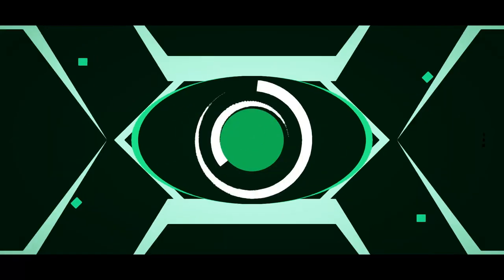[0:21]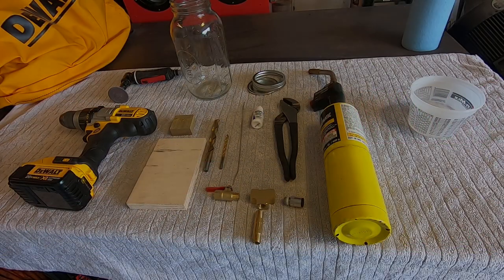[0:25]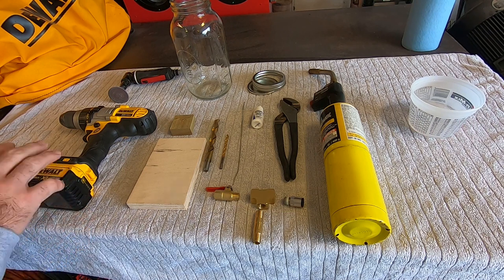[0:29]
Today I'm going to show you how to make your very own vacuum chamber using a half gallon mason jar. You can find them readily available at most supermarket stores. Very fun and easy way to get into wood stabilization or science projects, anything of that nature. Let's head out to the shop and get started. These are the materials you're going to need to make this vacuum chamber: a drill,
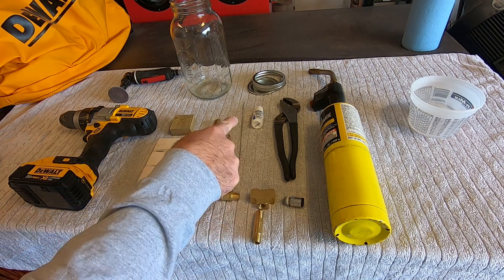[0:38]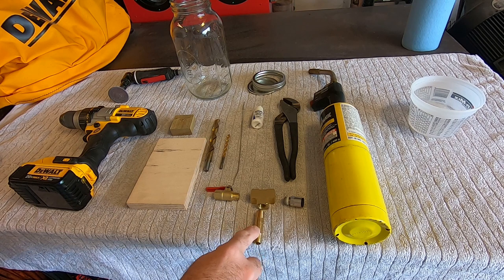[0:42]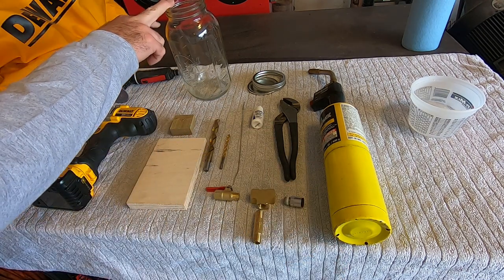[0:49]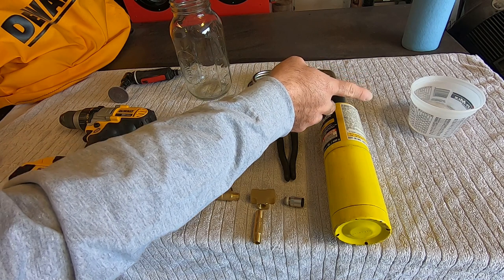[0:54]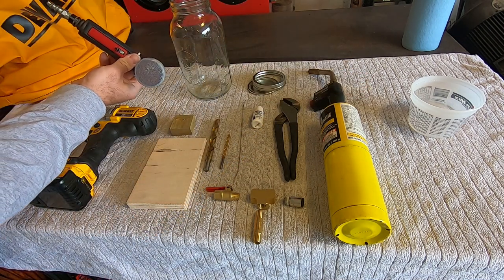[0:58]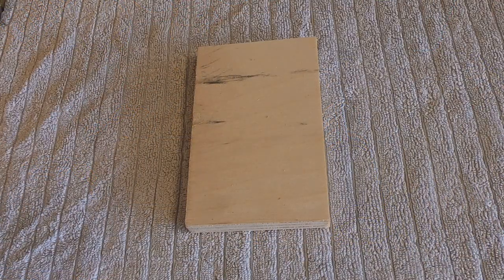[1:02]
a couple of pieces of wood for drilling the lid, a 31/64 drill, a smaller drill for a pilot hole, solder, flux, a quarter inch NPT valve, a cross, an inch and a half nipple, a quick disconnect for PEX, pliers, a torch, your half gallon mason jar, some water to cool off your part after you've soldered it, and I'm using a 90 degree air grinder to clean the galvanizing off the lid.
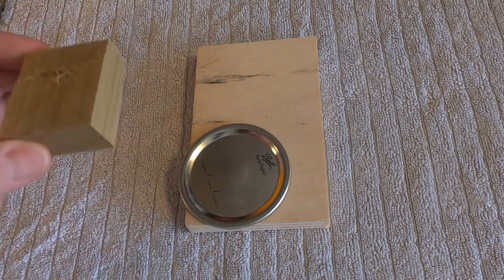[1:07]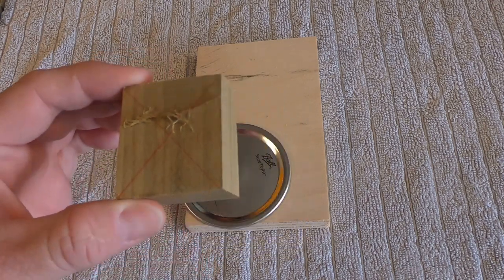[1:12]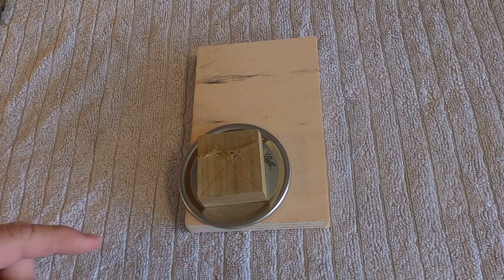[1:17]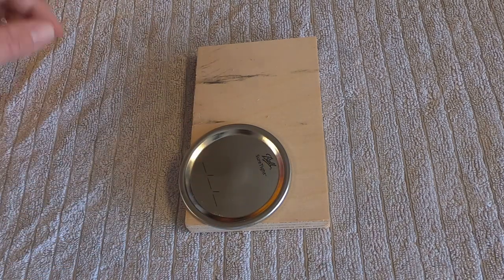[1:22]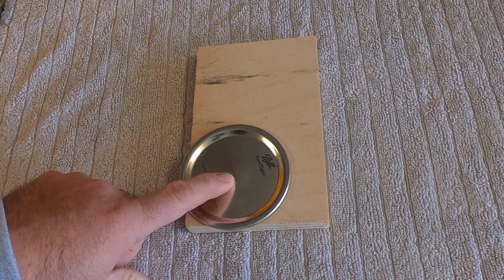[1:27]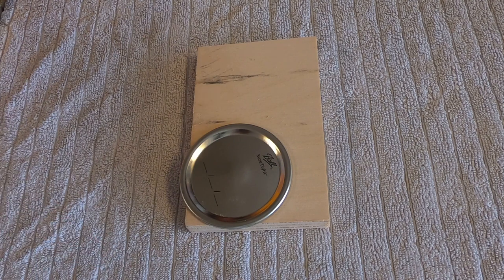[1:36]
What we're going to do is drill a hole in the lid. I've cut a piece of wood in a square and put an X on it so that I have the center of the square piece of wood, and I made it the same size as the recess in the top of the lid so that we'll know where the center of the lid is. When I did this the first time I didn't use the top backing, and when you drill the hole with your 31/64 drill a lot of the time you'll get tear out on the top. It'll actually peel the lid back like a can, and then it's a lot harder to solder. So we'll use the backing on both sides to prevent that from happening.
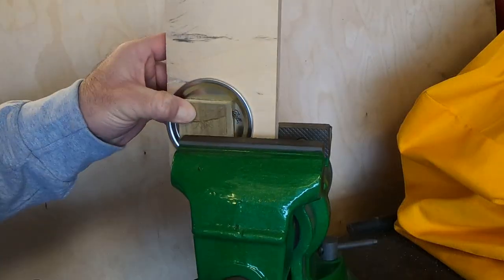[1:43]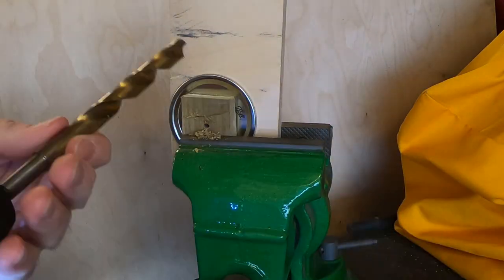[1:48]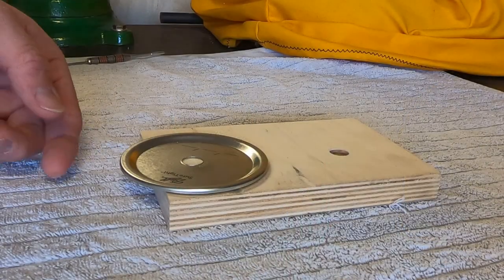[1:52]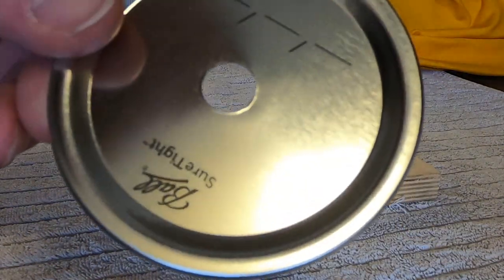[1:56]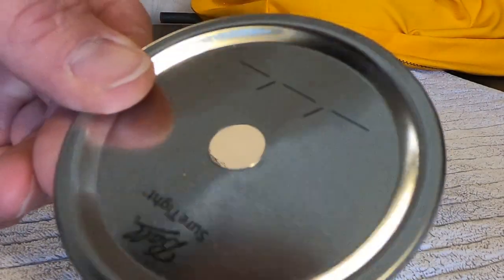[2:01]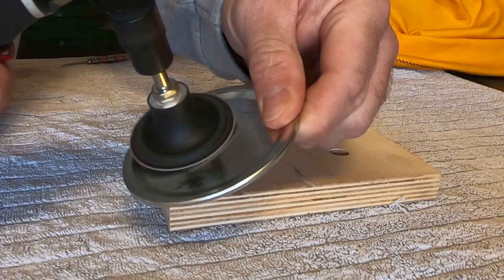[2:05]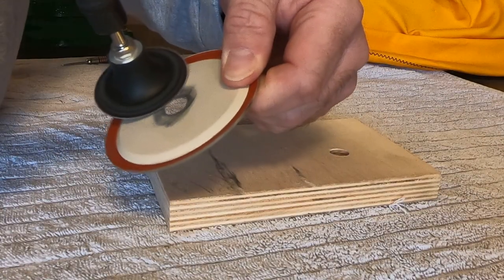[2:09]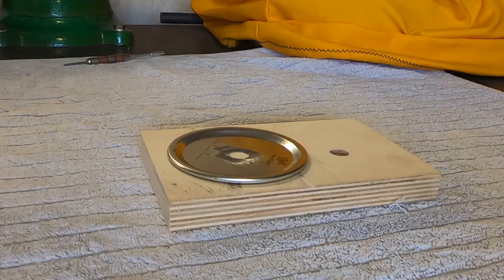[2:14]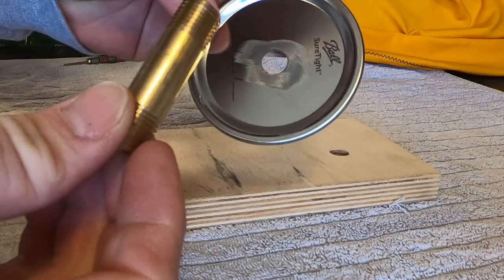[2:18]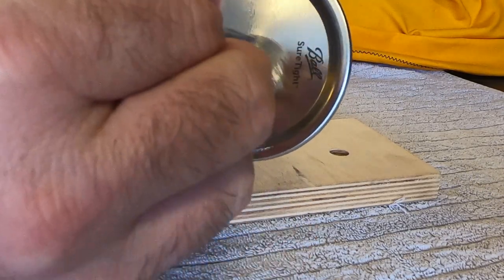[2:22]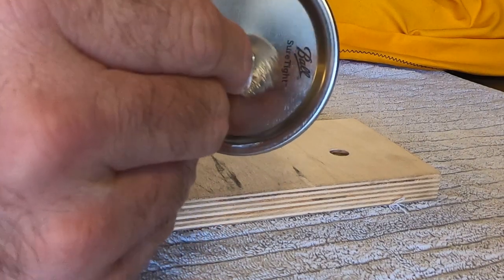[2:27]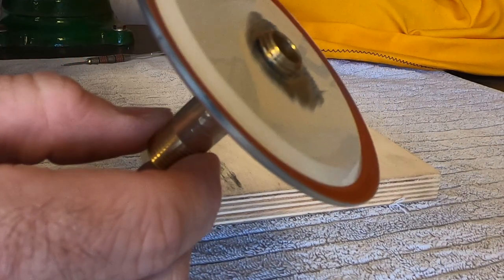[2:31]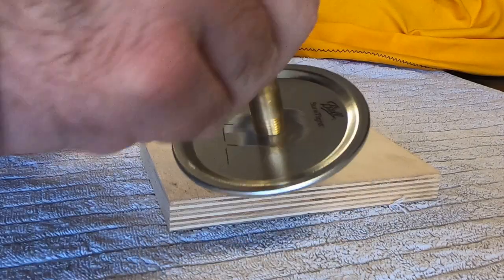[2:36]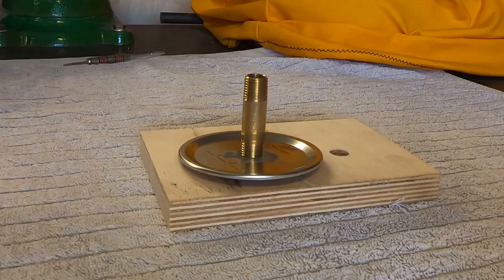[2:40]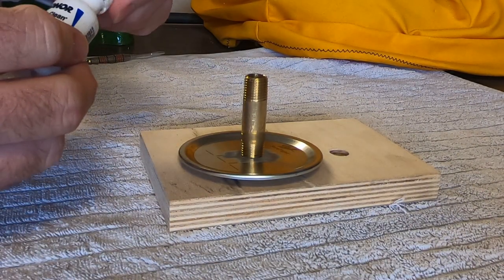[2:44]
We'll get it in the vise and drill the hole. Now we have our hole drilled, it makes a really nice clean hole. We're going to buff the paint off of it. The 31/64 hole should make your quarter inch NPT nipple thread into the hole. You want a really tight fit. We'll thread it in a little bit, leave maybe an eighth of an inch hanging out on the back side, and then sit it down on a piece of wood to be able to solder it. Put some of this stay clean liquid flux on it.
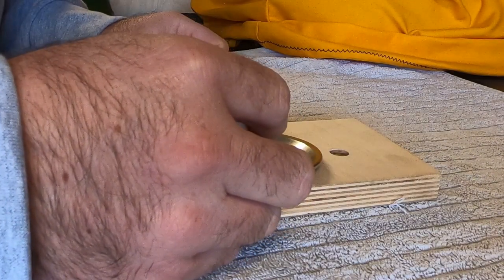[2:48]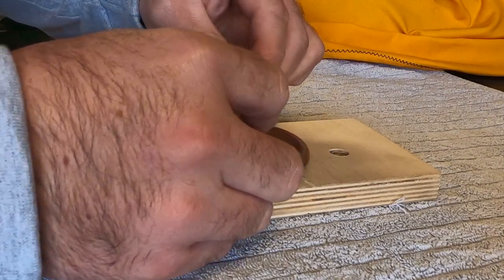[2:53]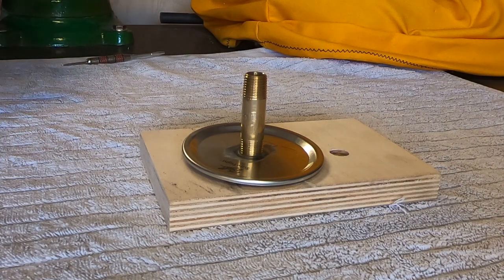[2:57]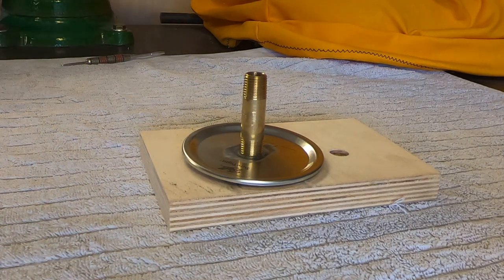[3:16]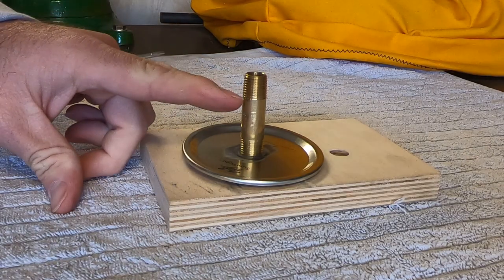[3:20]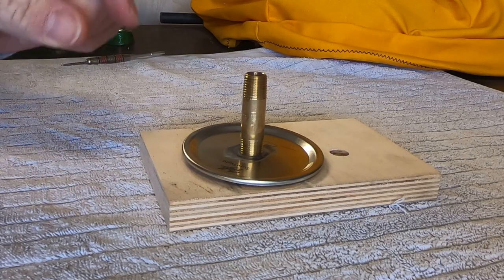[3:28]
And then we'll get ready to solder it. You don't have to use stay clean liquid flux or silver solder, just what I had laying around. I'm sure any flux and solder will work doing this. When you go to solder it, I'm going to direct the heat at just the fitting because the lid can't take very much heat. We'll get the fitting really warm and then get the solder to start flowing, and once we get the solder flowing and I'm happy with the joint, we'll dip it in the water and solidify the joint.
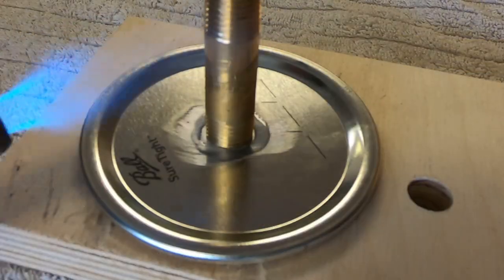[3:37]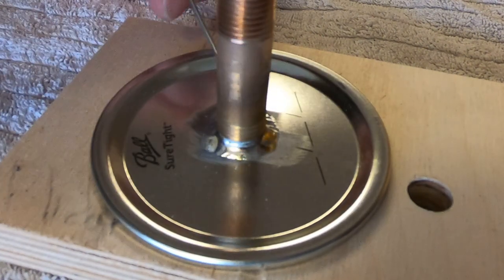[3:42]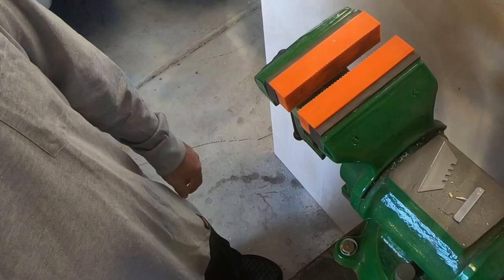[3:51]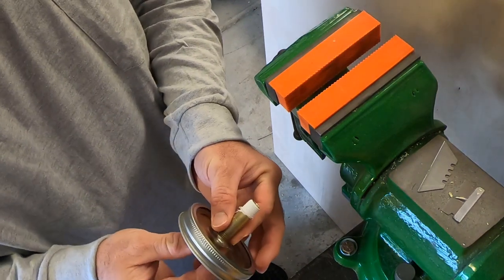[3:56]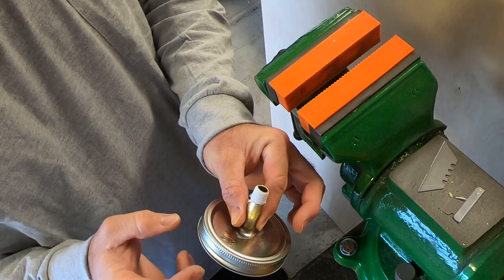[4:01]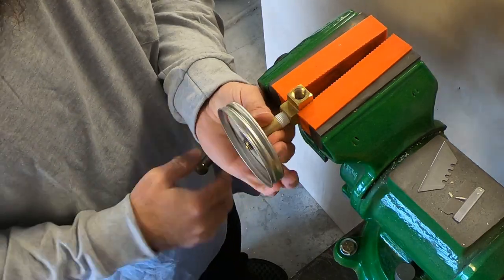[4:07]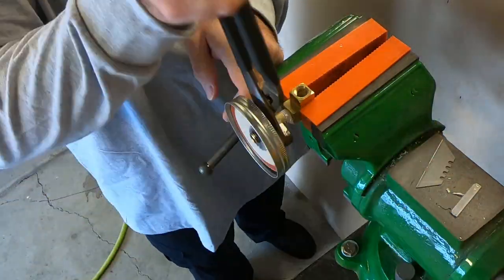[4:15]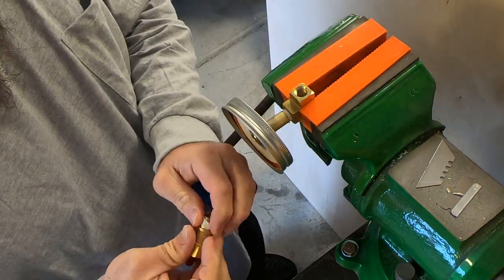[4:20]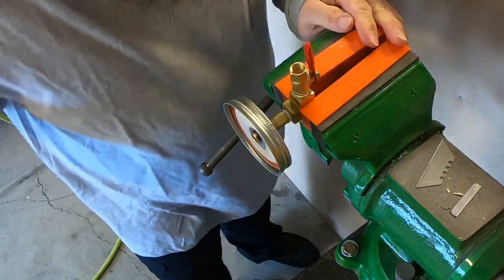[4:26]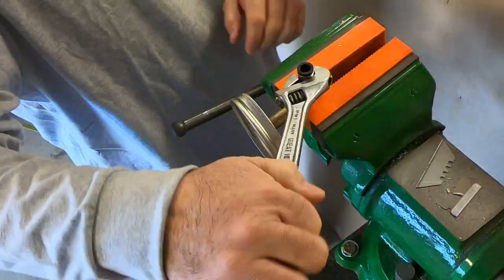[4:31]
Now that we have our pipe threaded into our lid, we're going to make up our fittings. Put the threaded ring onto the lid before you do this, or else you won't get the threaded lid on. And then we'll get to the end one.
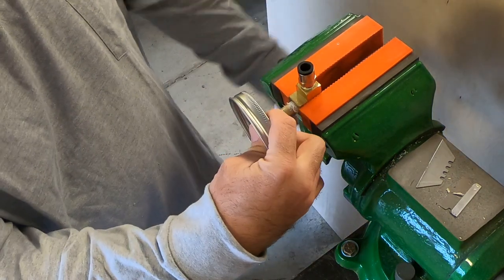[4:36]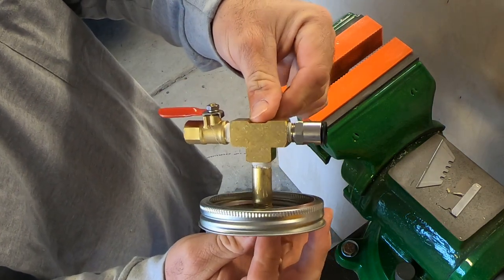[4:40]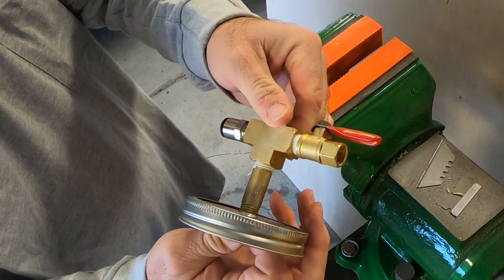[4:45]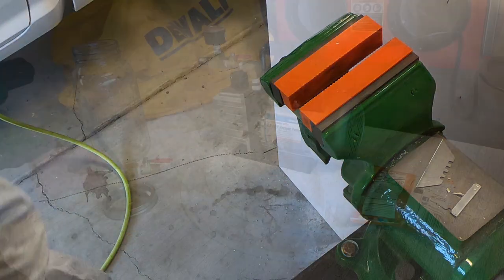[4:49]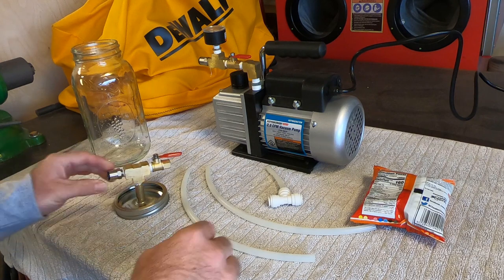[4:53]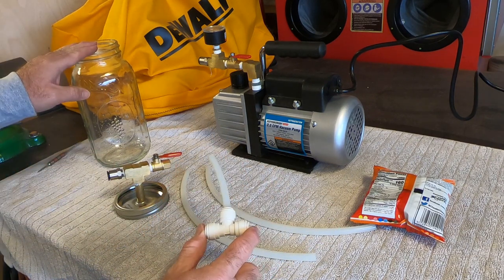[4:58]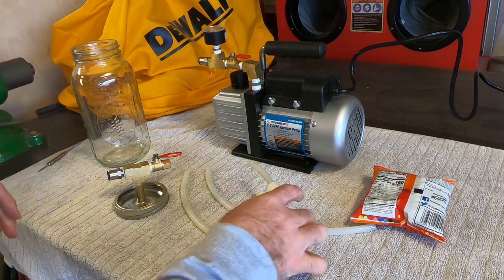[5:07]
Now we have our lid assembly made, let's try it out. I like to use these tees too so that I can have more than one chamber. If I'm doing any sort of wood stabilization and dyeing, you can do multiple colors at the same time, or do a separate process. Let's hook it up and try it out.